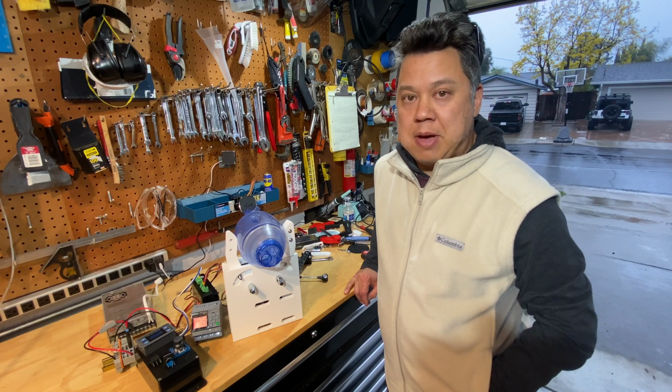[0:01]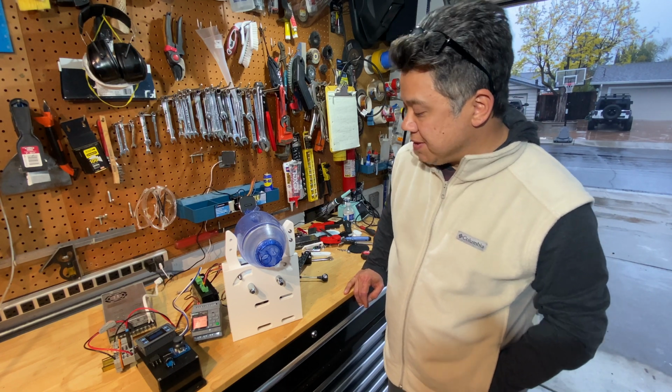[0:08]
Welcome back. This is part two of my ongoing series about how I'm building a home-built ventilator. As you can see, I've made some progress since my last video.
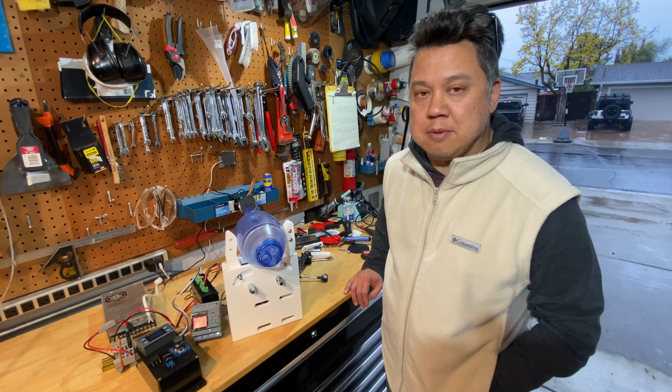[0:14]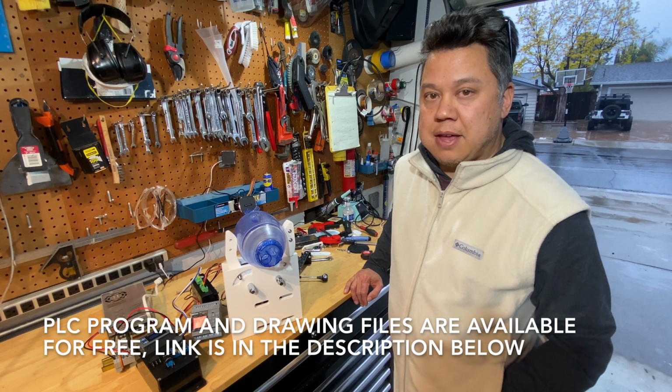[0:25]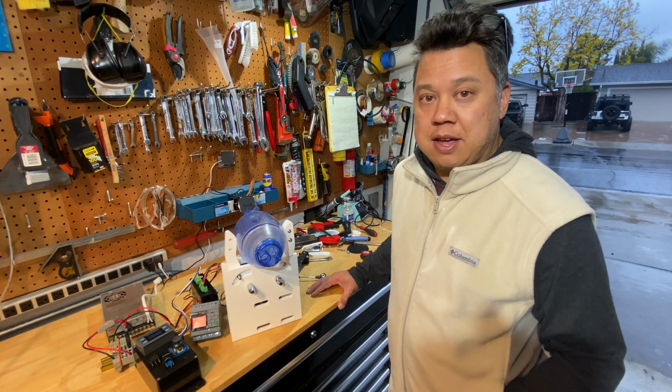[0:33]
I decided to go with a stepper motor instead of the AC gear motor because I wanted to be able to change the speed of the motor. So while I was waiting for some of those parts, I spent most of last week programming the PLC. And now that I have all the parts that I need to complete the project, I'm finally getting some of the mechanical work done. So, let me show you all the parts that I got and how they're all going to fit together.
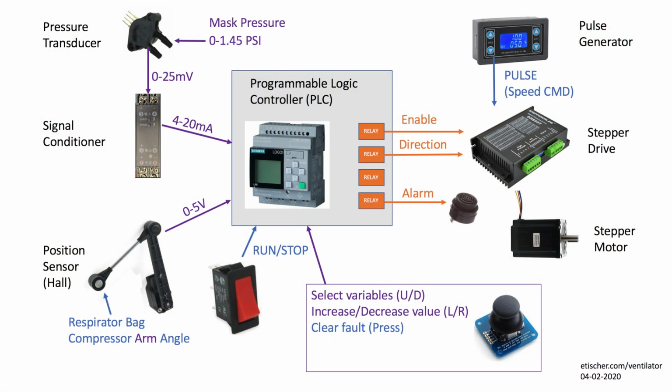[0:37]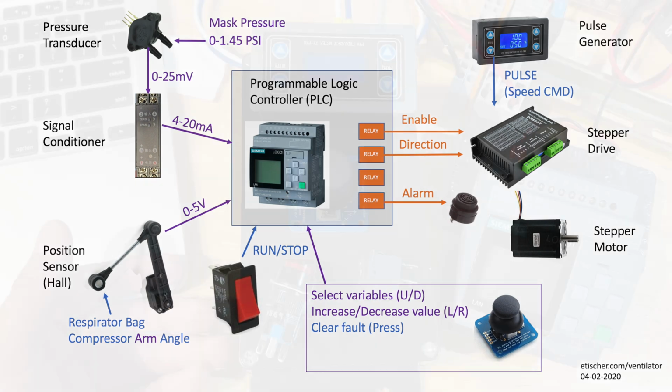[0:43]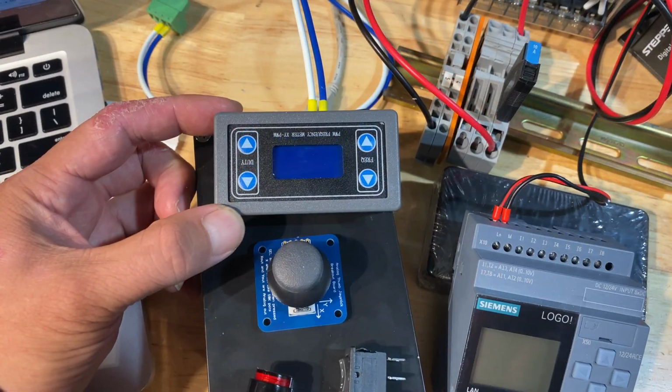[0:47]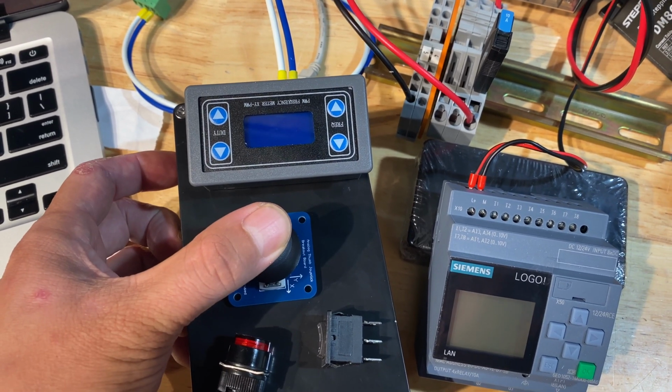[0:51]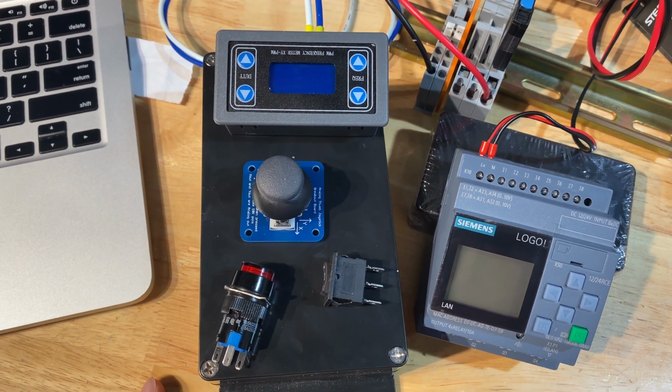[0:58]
This diagram is kind of a high-level view showing all the controls hardware and sensors involved in my ventilator project. This is the control panel for my ventilator. This sets the motor speed. This is a two-axis joystick with click for setting values on the PLC screen. And just a start and stop button for controlling the mode and starting the machine.
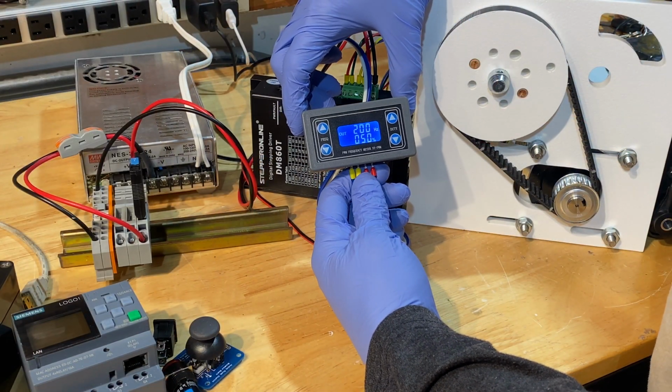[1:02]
This is my pulse generator. This is what sets the speed of the stepper motor. So this is sending high frequency pulses to the drive. The drive amplifies those pulses into something the motor can use for high current. The PLC will tell this drive to either run or stop or run backwards based on feedback from the arm position sensor. So this is what's going to tell the drive when to stop, start, and reverse.
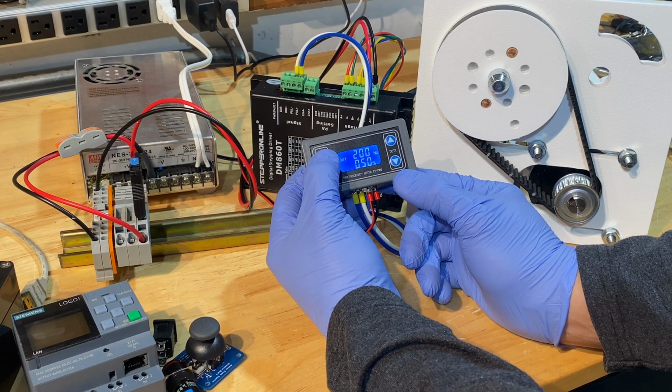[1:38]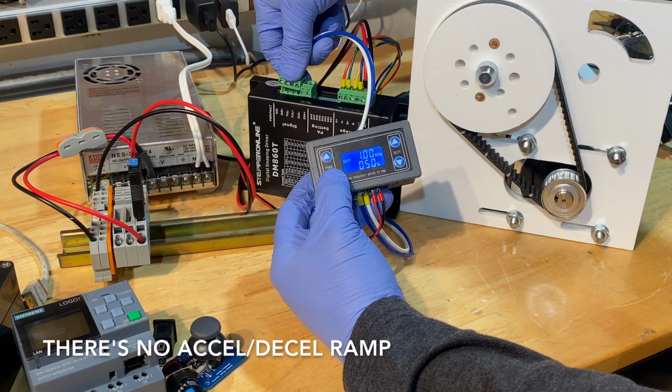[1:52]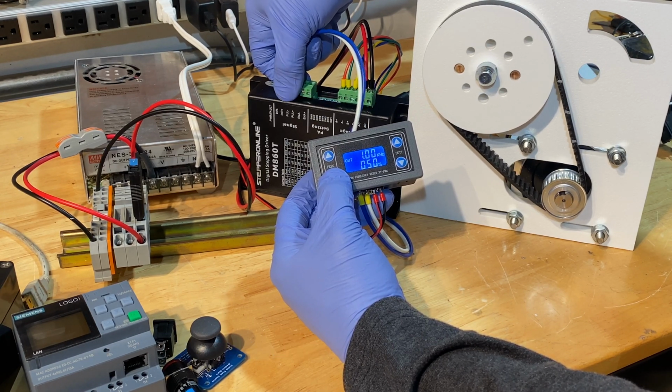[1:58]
And everything's plugged in right now, so I can actually make this run. So this is 200 hertz. And I can crank it up. And the drive is pretty quick to react. It does seem like a bit of a waste to have such a huge motor only doing about a quarter of a turn, so it would be nice to have a gearbox, but that adds quite a bit of expense. It was cheaper just to buy a larger motor.
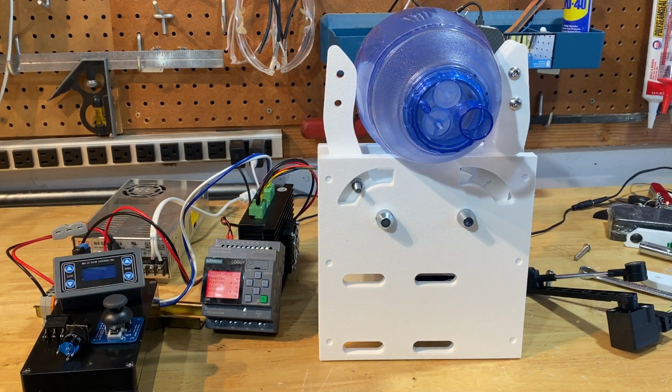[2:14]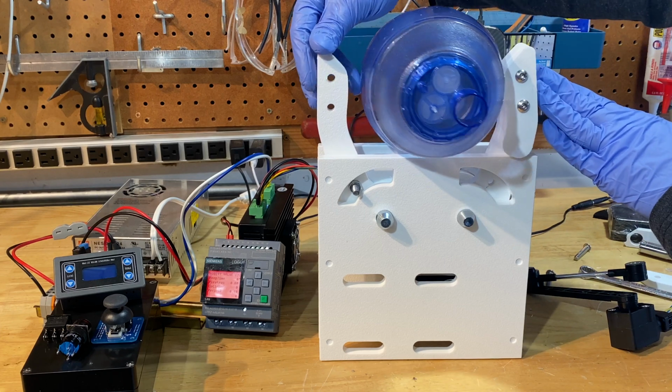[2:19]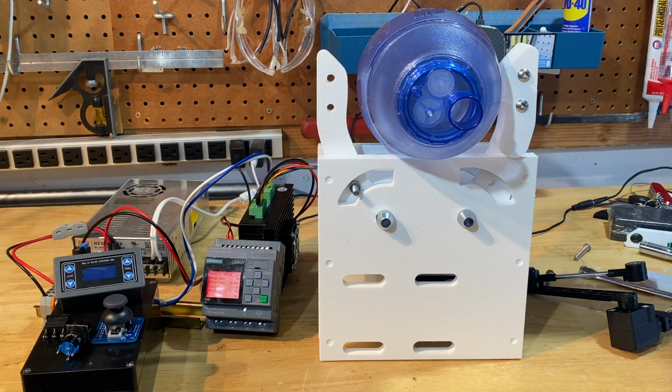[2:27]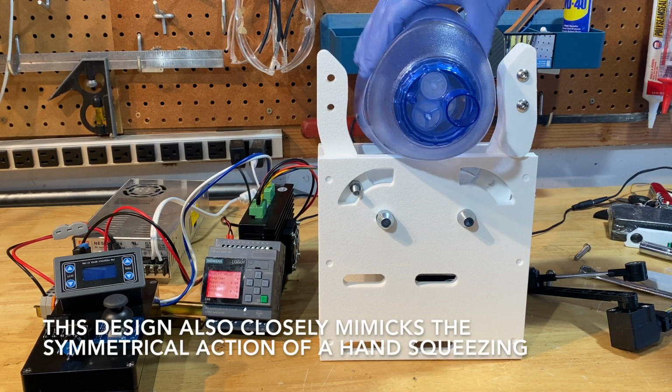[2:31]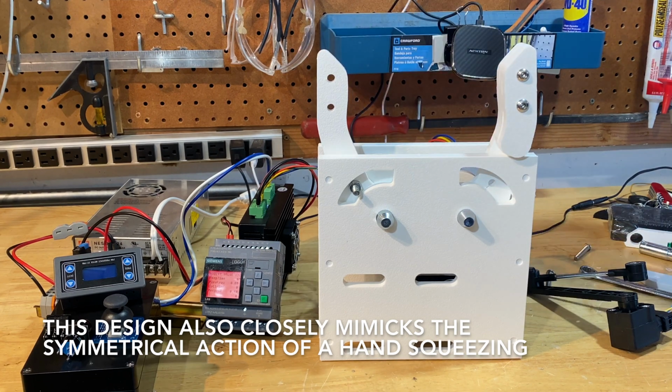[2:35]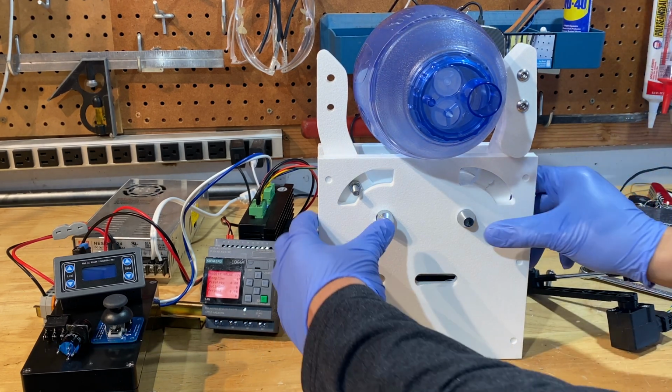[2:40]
And this is just showing the mechanical action of the arms. And one nice thing about this mechanical design compared to some of the other cam-driven mechanisms is an operator can just reach in and start operating the bag manually if something went wrong with the automation. And it's also easy to remove the bag without disconnecting any hoses. I can show you what it looks like under the hood.
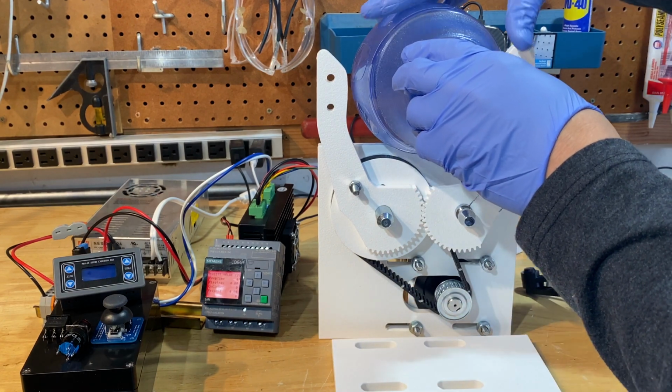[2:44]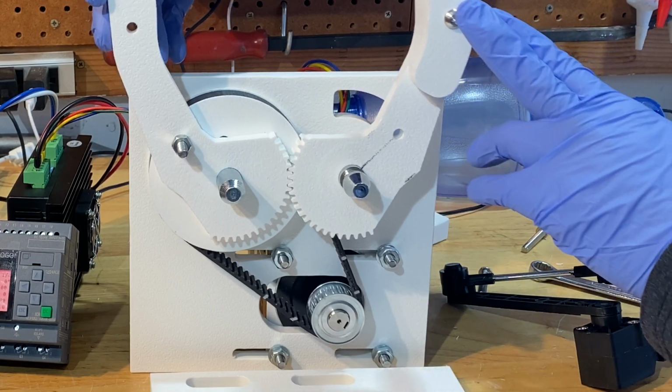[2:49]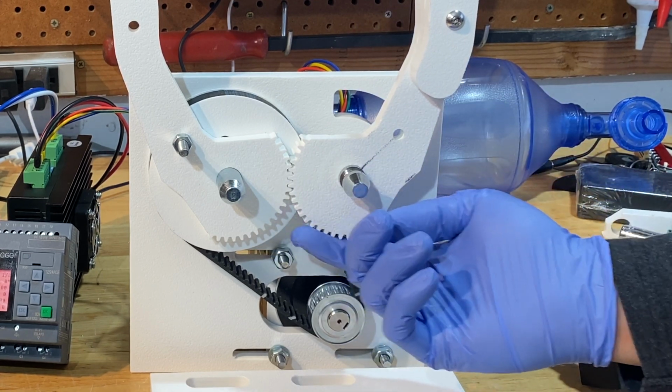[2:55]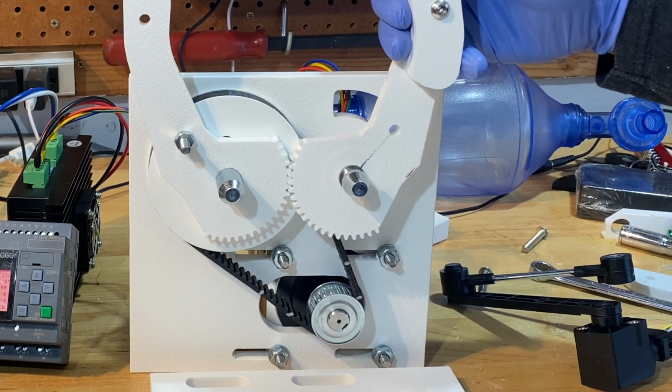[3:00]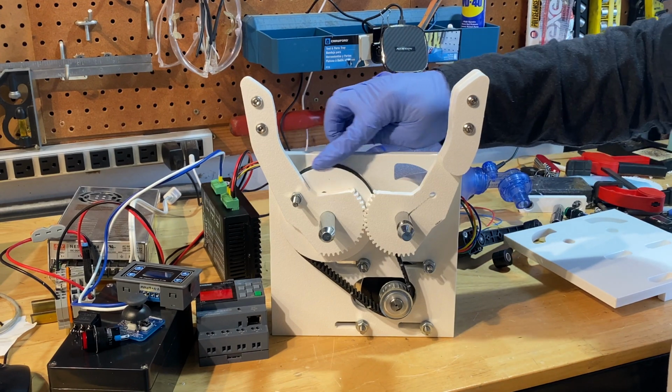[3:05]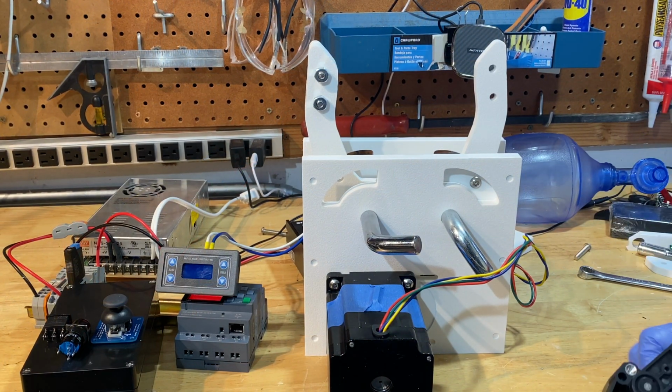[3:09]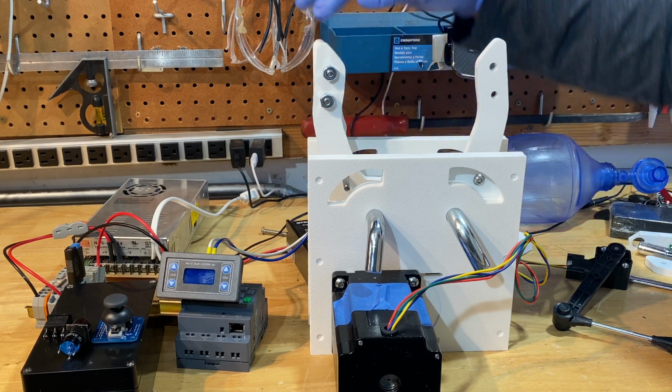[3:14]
So I'm using a stepper motor with a belt to actuate the arms. I was a little worried about machining a small plastic gear to drive these teeth, so I think the belt for my case will be a little more robust. Made sure to leave some clearance here so the belt won't rub on the bellows. And here's a look at the backside. And I have a provision here for mounting my position sensor arm.
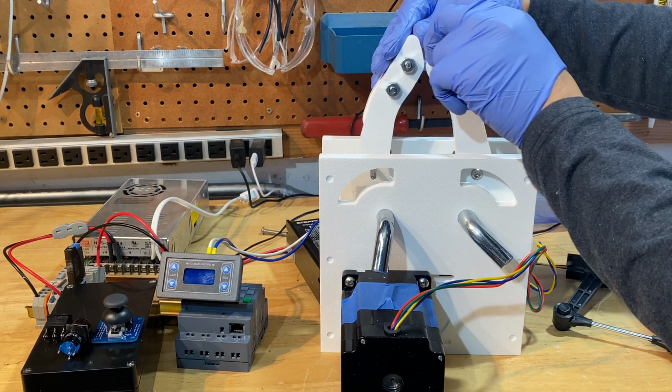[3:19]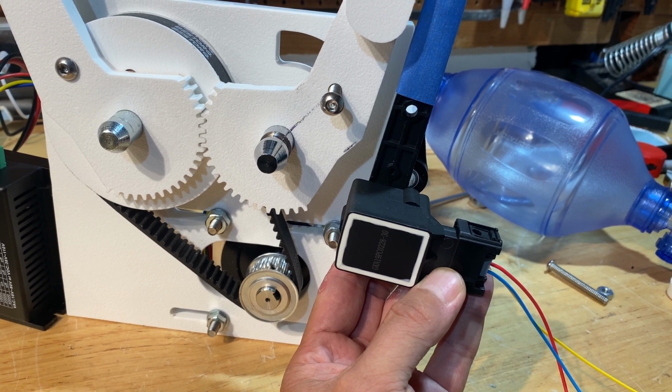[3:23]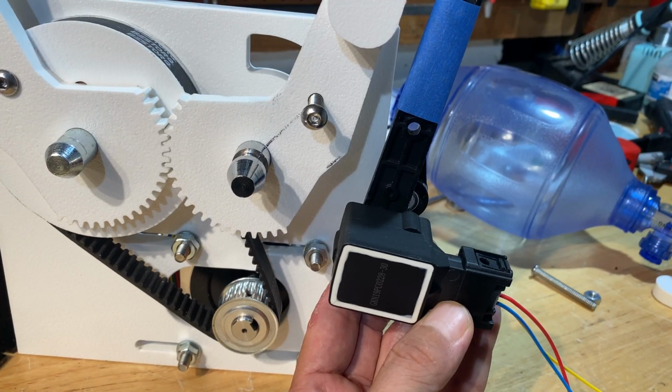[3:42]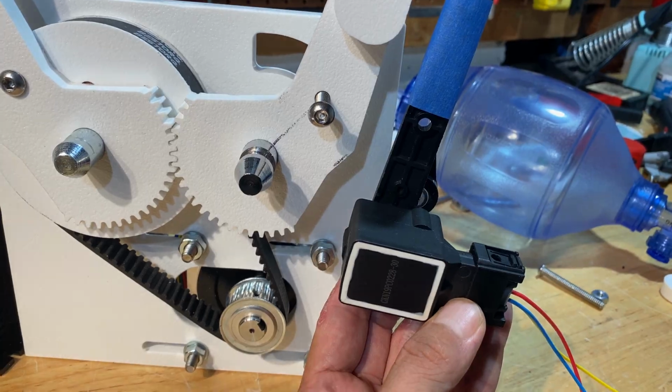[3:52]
This is the sensor I'm using for measuring the position of the arm. It's a Hall effect sensor, so it's solid state. There's no wiper arm to wear out. And this is actually off of a Land Rover. This is what they use for measuring the ride height on their air suspension. It should be fairly ruggedized and they're cheap at $16 a piece. I'm planning on cutting the sensor arm short so that I can maximize the travel of the sensor based on the limited stroke of the ventilator arm.
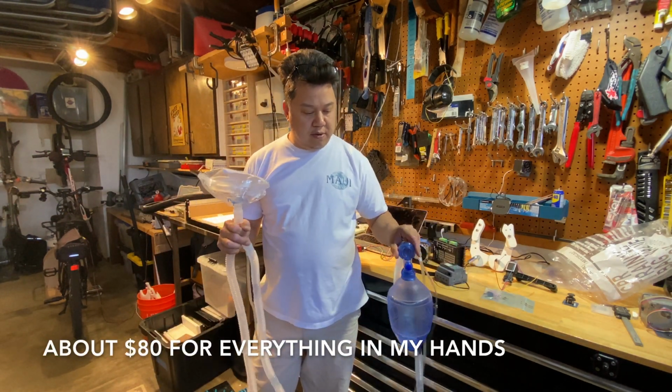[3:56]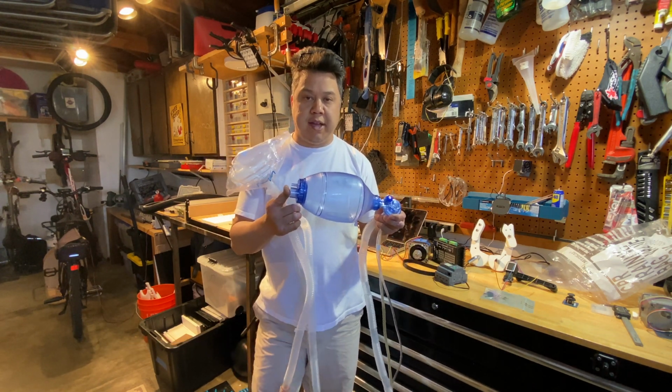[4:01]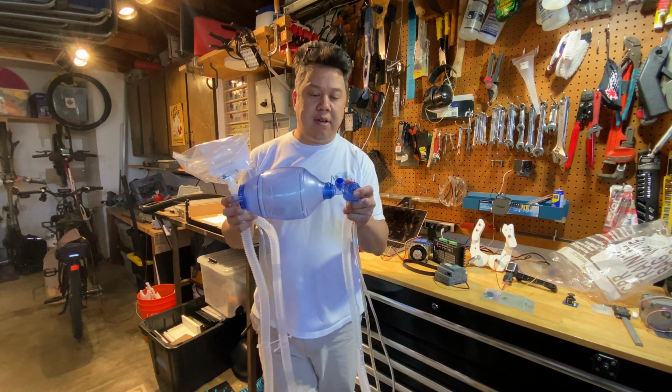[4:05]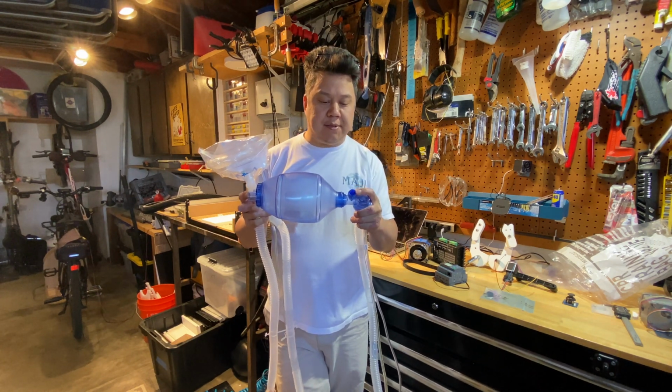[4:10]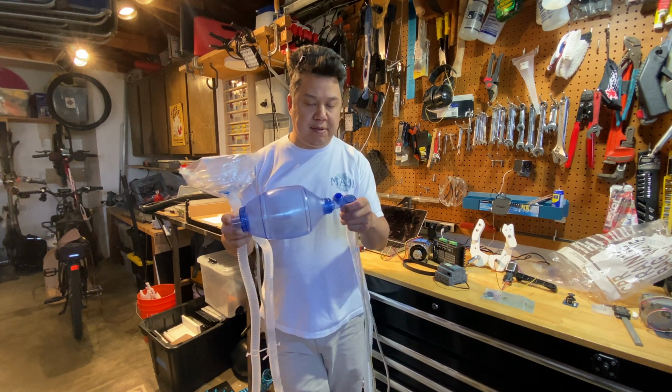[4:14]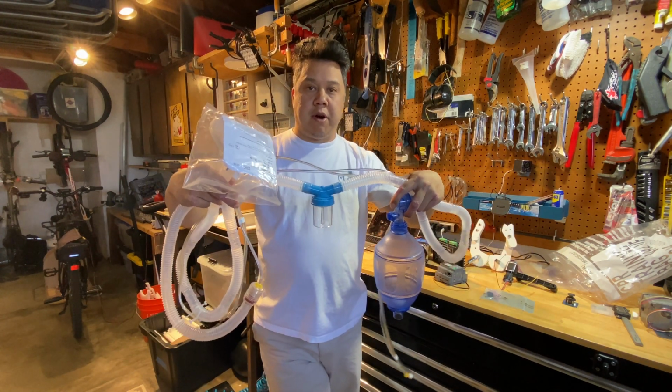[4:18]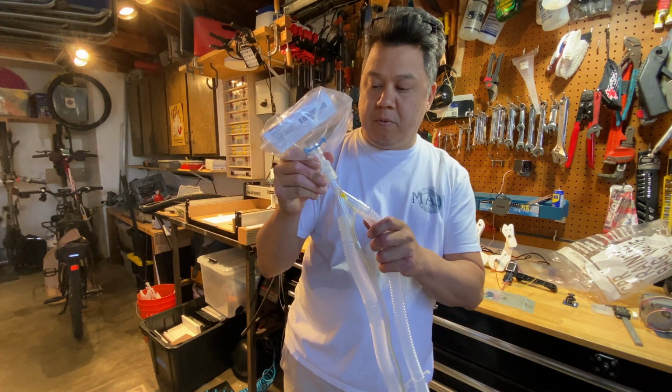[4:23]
So the full breathing apparatus has arrived, starting with the bag. This has a valve to only let air in the inlet side and only let air out the outlet side. And there's also a pop-off valve, so if there's an overpressure event, this will bleed pressure off before sending too much pressure to the patient's lungs. Air flows through this intake hose, through a water separator cup, and into this Y, which supplies air to the mask.
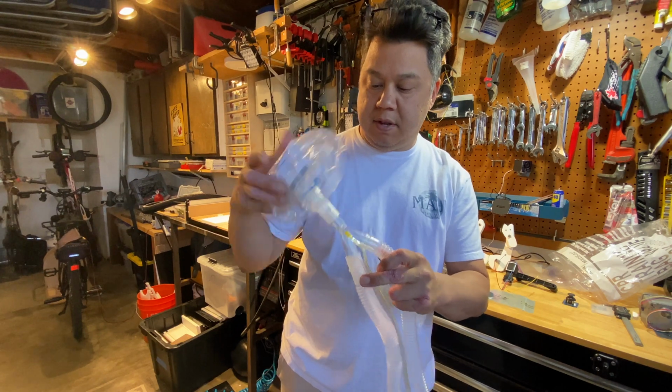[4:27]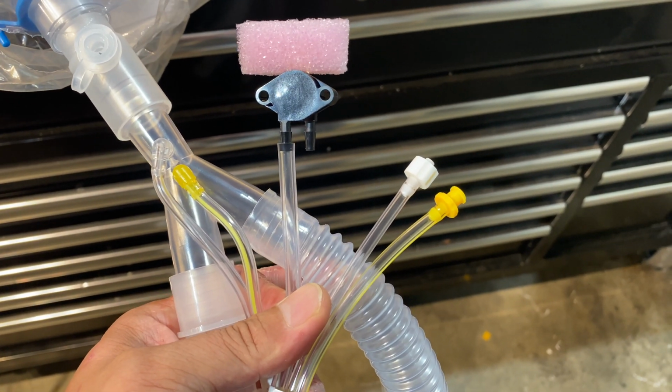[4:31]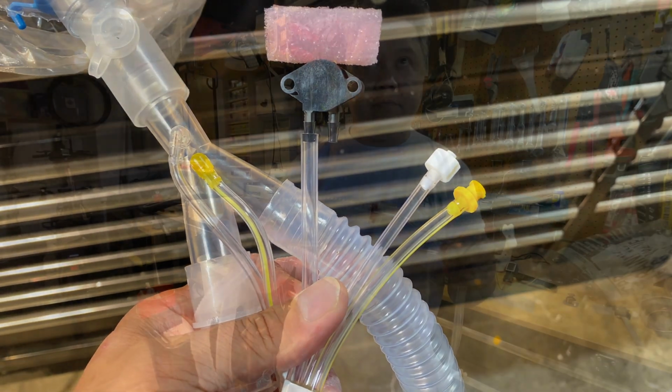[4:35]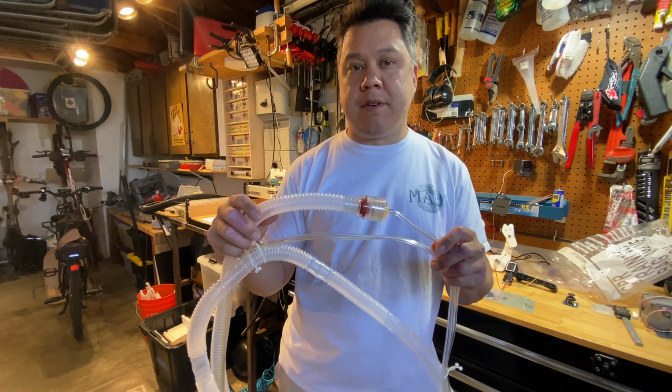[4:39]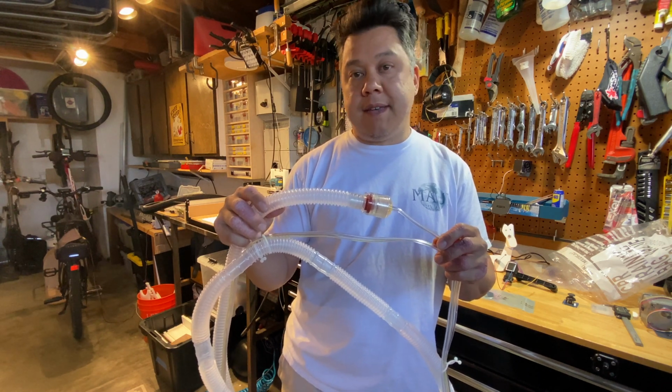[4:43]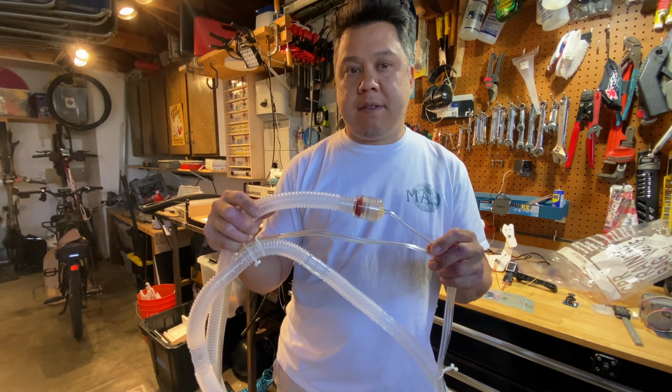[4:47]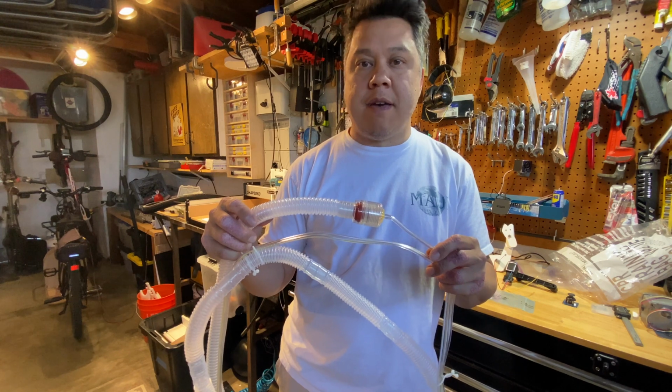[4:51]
The splitter has some tap lines, and I'm using one of those tap lines to hook up my pressure transducer. This will measure pressure in the mask. On the exhaust side, there's a PEEP valve, which maintains a certain minimum pressure inside the patient's lungs. So let's say it's maintaining 0.1 PSI in the mask, and as the patient inhales, that pressure will drop to zero, and that will be the trigger to start the next breathing cycle on the ventilator.
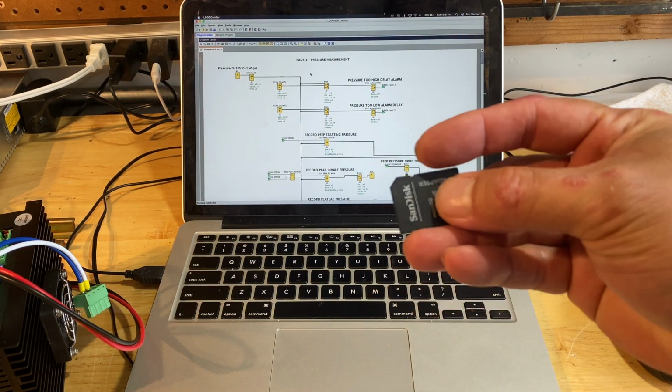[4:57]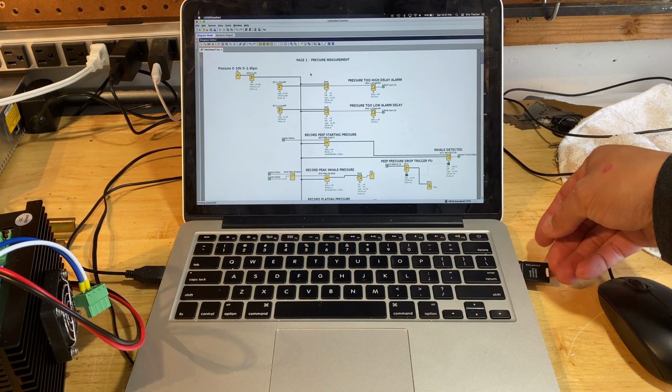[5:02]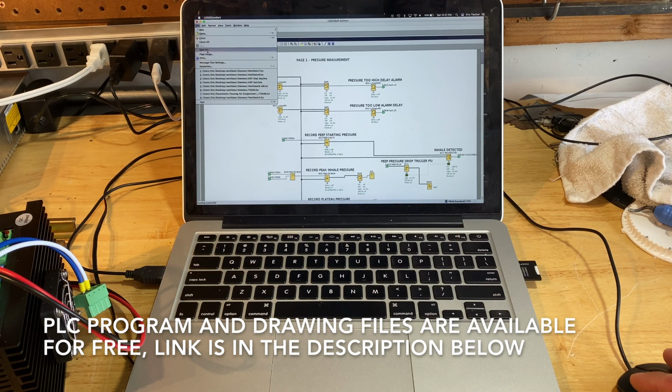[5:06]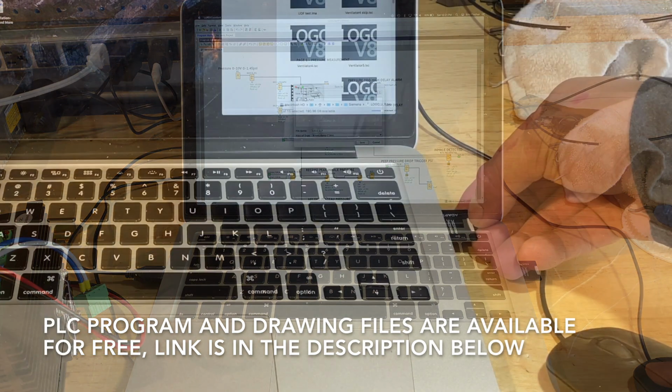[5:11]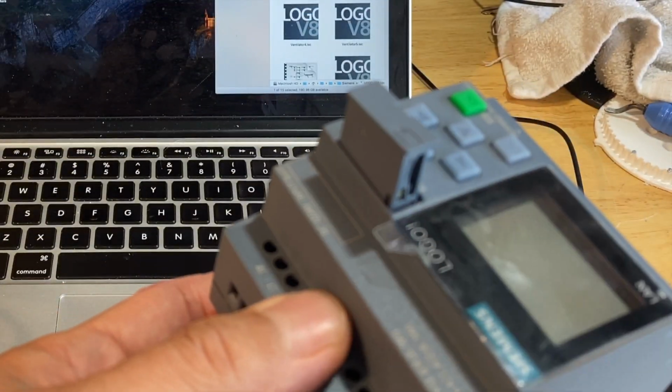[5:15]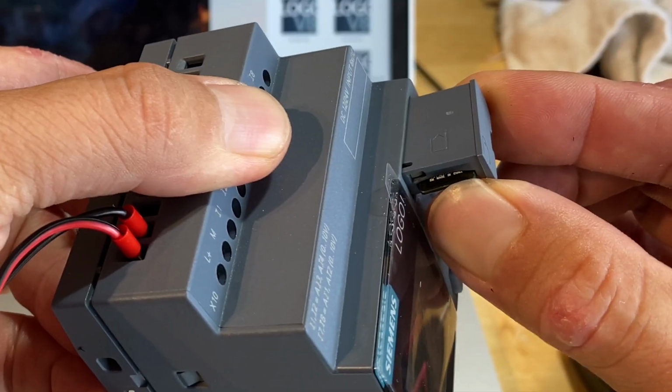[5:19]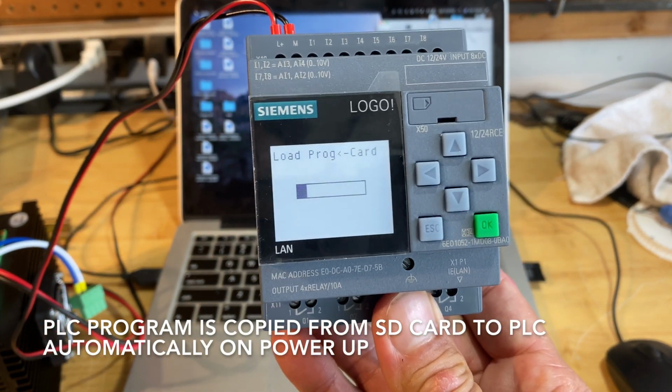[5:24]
Wanted to quickly show how to install the PLC program into the PLC. Just use an SD card and save the file as a .bin. Here's my PLC, and the card goes in upside down from what you would think. Program's automatically loaded.
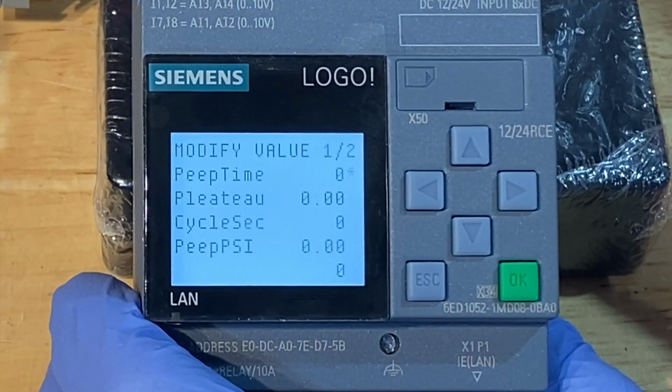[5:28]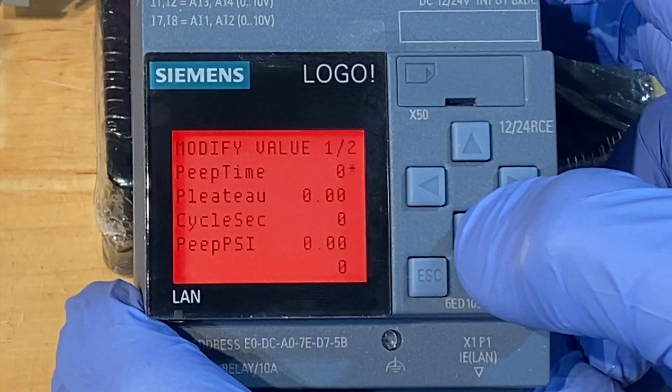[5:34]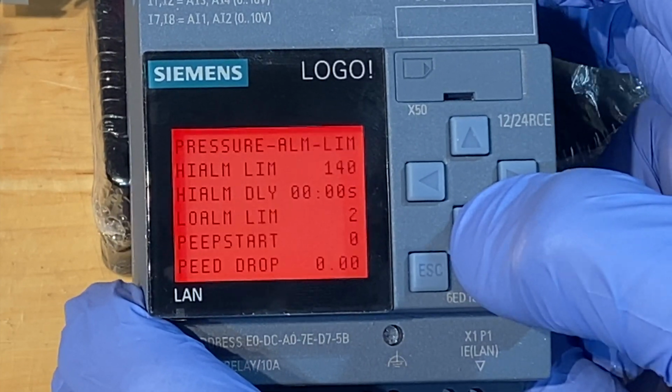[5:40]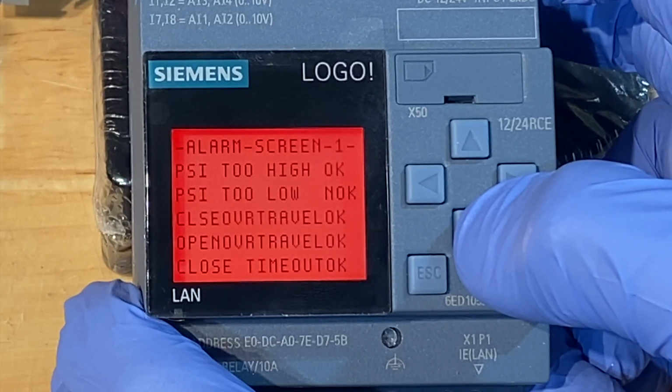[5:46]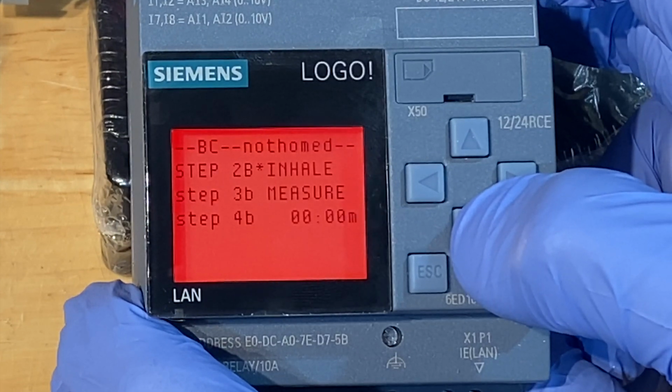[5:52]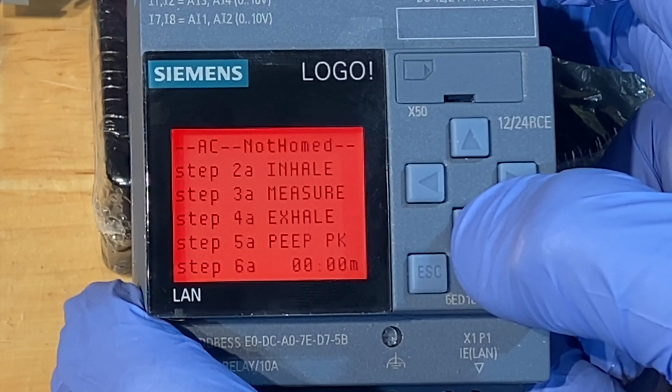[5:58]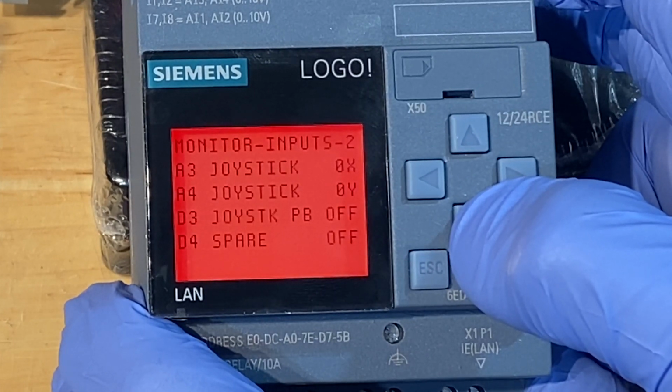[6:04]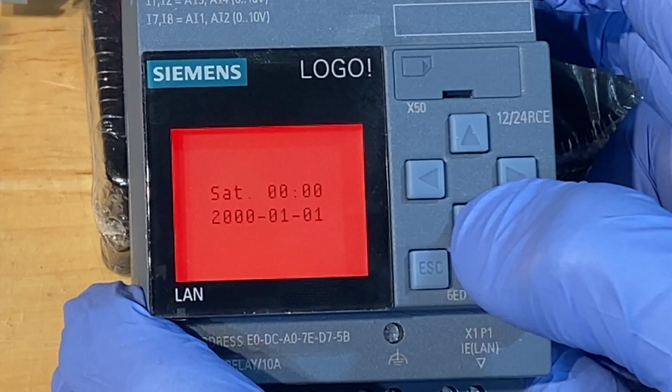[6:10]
I'm gonna run through the screens real quick. I'll do a more detailed video on the PLC program at a later date, but just wanted to show you all the screens that I have programmed so far. Some of the icons are broken on the screen because there's no I/O hooked up. This is why the screen's in a red backlight right now. But I have a lot of alarms and step sequencers displayed on the screen so that the operator can see what the PLC is expecting to go to the next step. And one kind of cool thing is the screen will normally be white, and when it's waiting for the patient to inhale to trigger the next breath, it will be displayed in an orange backlight.
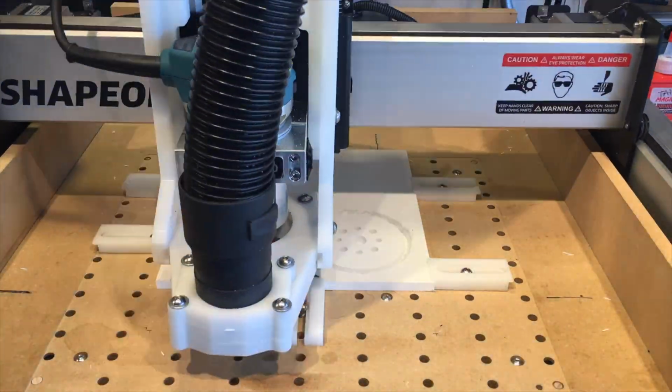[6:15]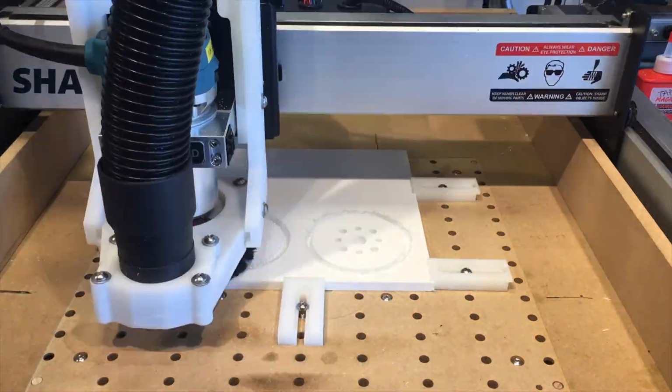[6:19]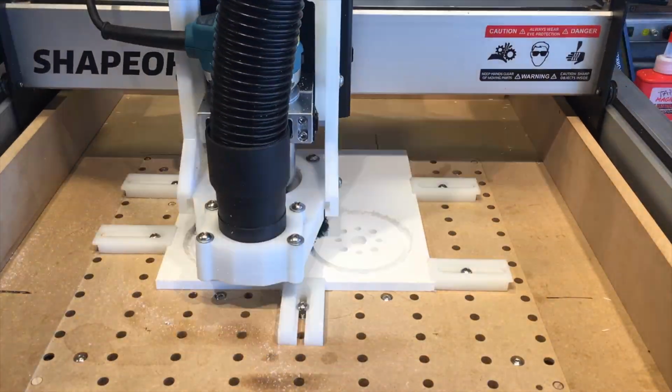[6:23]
The most time-consuming part of this project is milling the teeth on the gears and sprockets. I'm using a 16th inch end mill with a 10 millimeter depth. So to keep down on deflection and make sure I don't snap the bit, I have to go really slow and take really shallow cuts. So it takes a really long time.
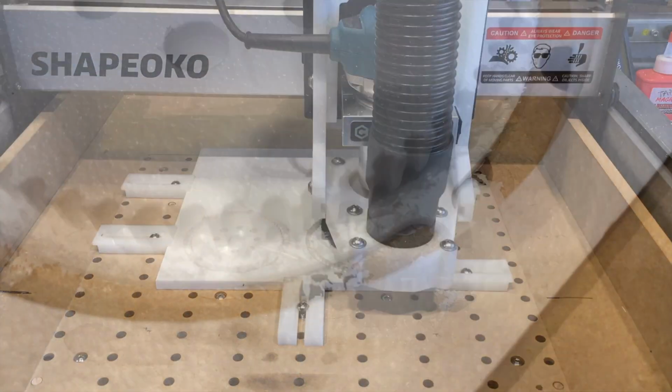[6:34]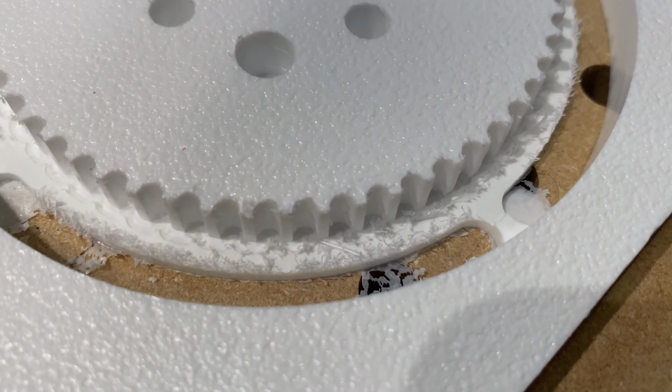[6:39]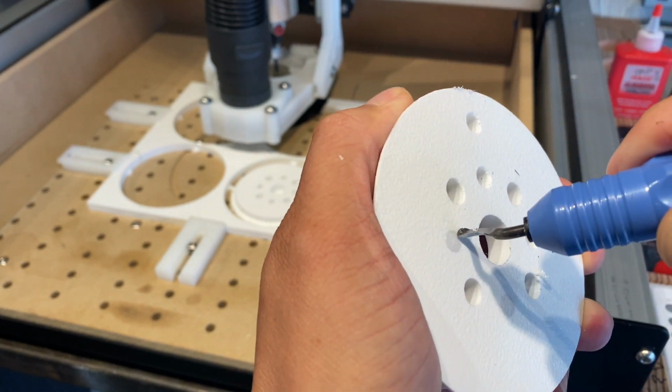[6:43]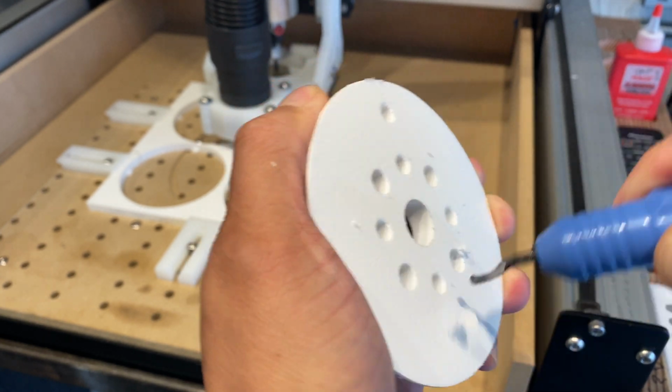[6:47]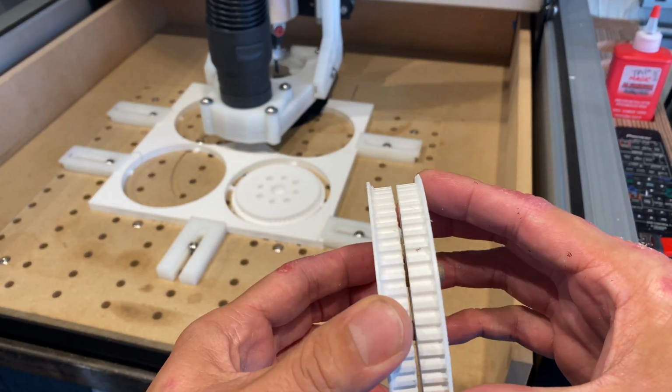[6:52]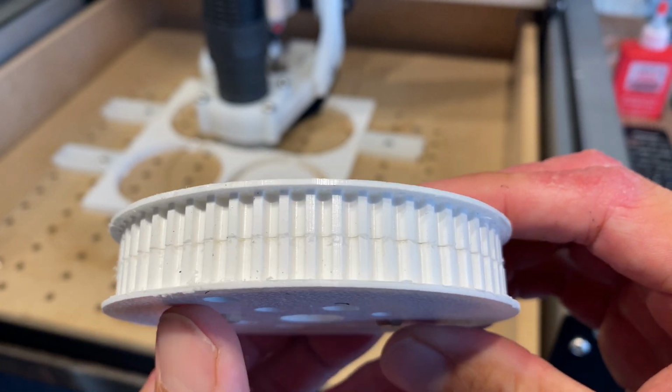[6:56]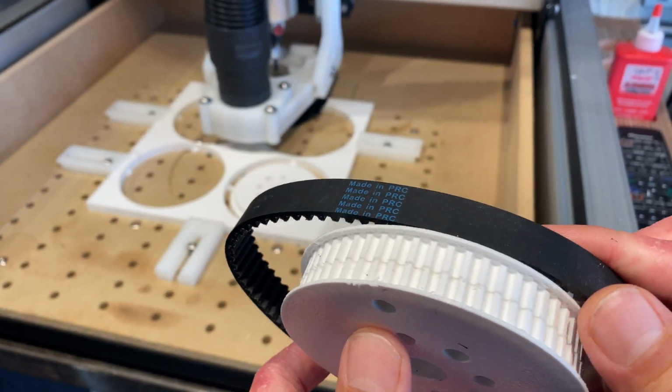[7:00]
I am always impressed with how high a quality the cuts are, and it is always satisfying to stop your end mill just shy of hitting the wasteboard. I really like having a paper-thin layer of plastic to cut off with a deburring tool. And since my end mill is only 10 millimeters deep, I had to machine the pulley in two separate halves, so I'm using some dowel pins to pin them together. And it's nice that the pulley has a lip on both sides to keep the belt centered.
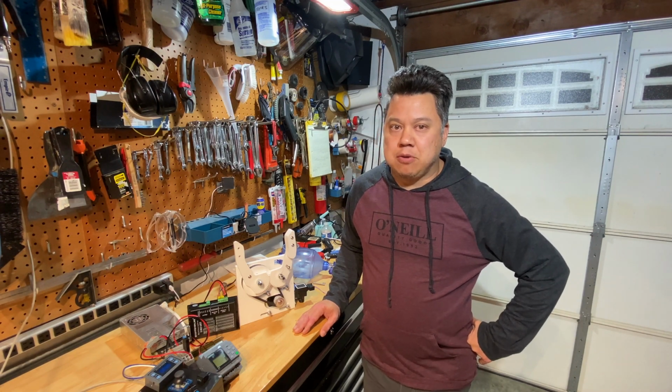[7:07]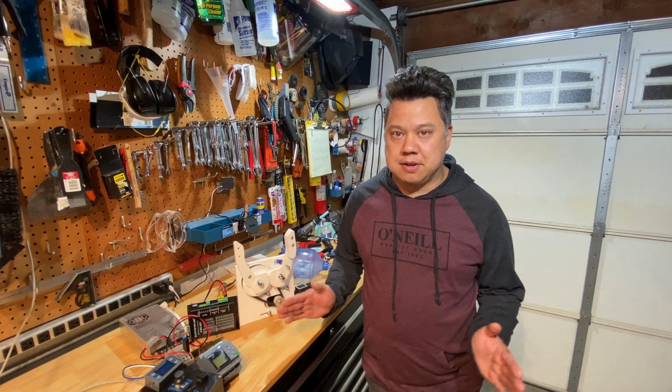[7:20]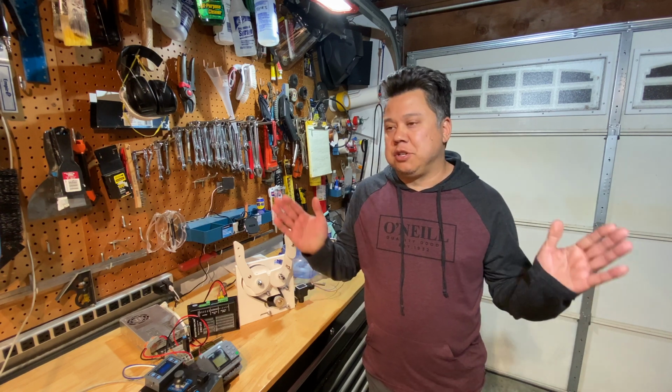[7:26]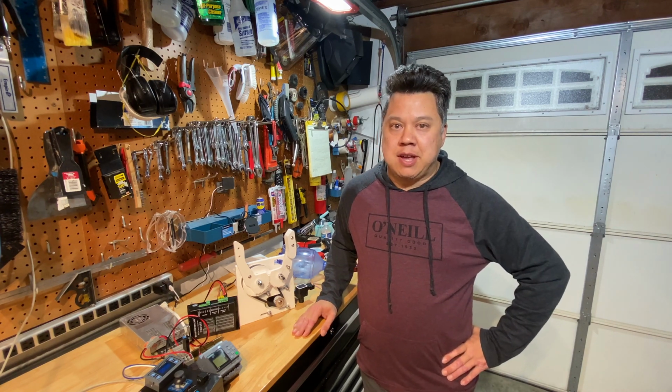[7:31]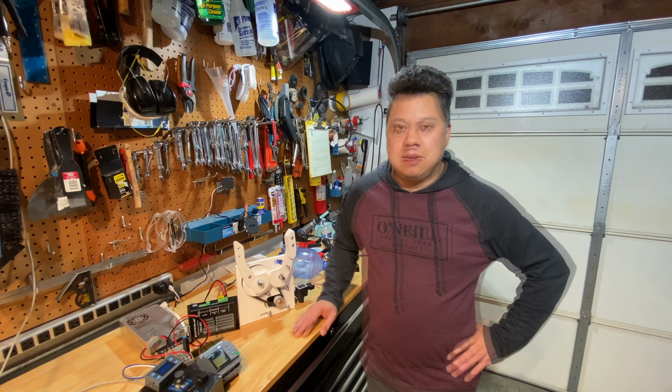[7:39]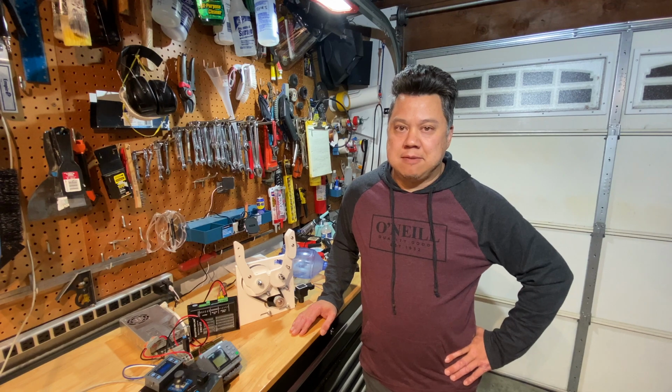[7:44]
One thing that sets this project apart from others is that this actually has feedback to measure when the patient's trying to inhale. When the patient takes a breath, the pressure in the mask will drop, and that's the signal to tell this ventilator to start pumping air into their lungs. A lot of the other ventilator projects I'm looking at are just a windshield wiper motor going on a fixed time. So if the patient happens to be exhaling and the machine's trying to blow air in, the patient's always going to have to try and stay synchronized with the machine. This ventilator, because it has feedback, will synchronize with the patient instead.